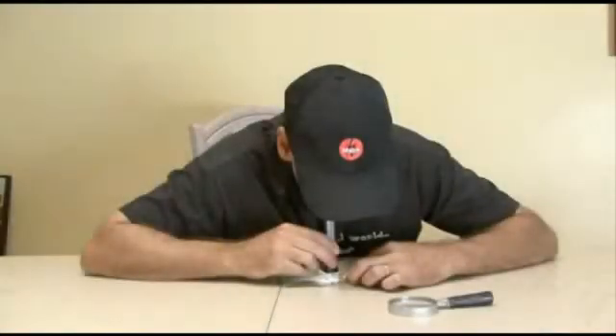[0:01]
Have you ever taken a close look at a new $20 bill with either a microscope or maybe a magnifying glass? Well, you're going to find on there, if you know where to look, what's called microprint, which is small words and numbers that are there for security reasons. Well, today, we're going to take a microscope to the next level by building a lensless microscope where you can actually record what you see on this week's Weekend Project.
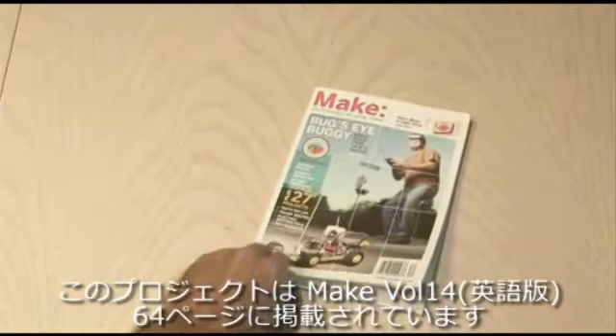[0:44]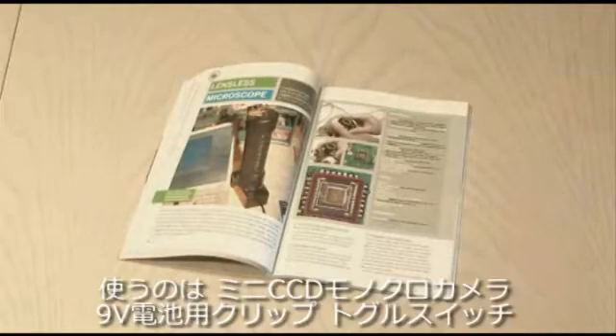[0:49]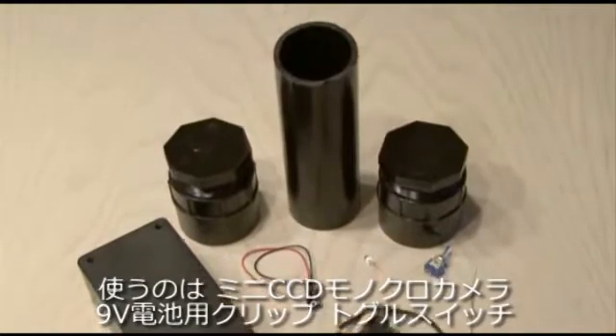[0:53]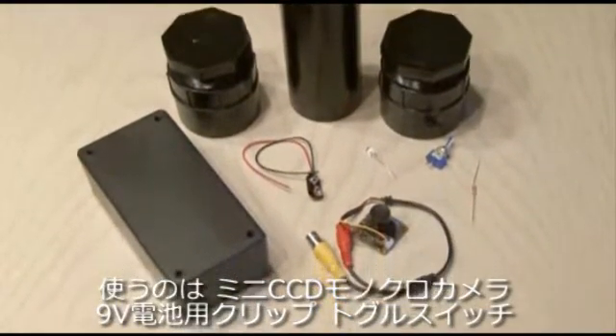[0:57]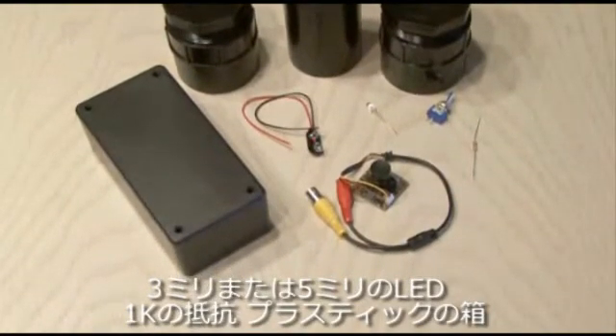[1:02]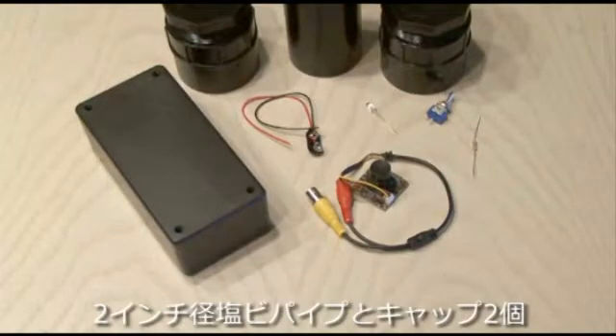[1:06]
You'll find the lensless microscope in Make Volume 14, page 64. The main components are a mini CCD monochrome camera, a 9-volt battery clip, a single-pole, single-throw switch, a 3mm or 5mm LED, a 1K resistor, a project box, and some 2-inch PVC pipe and caps.
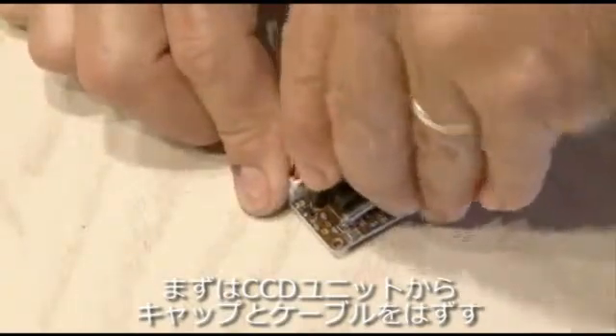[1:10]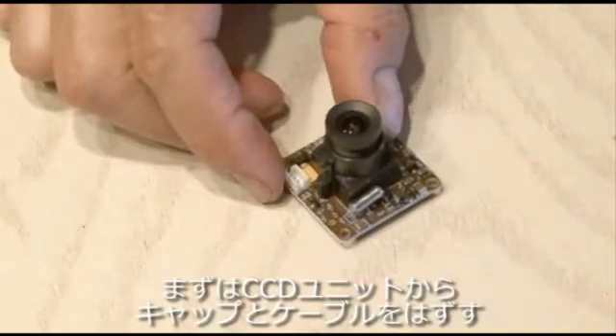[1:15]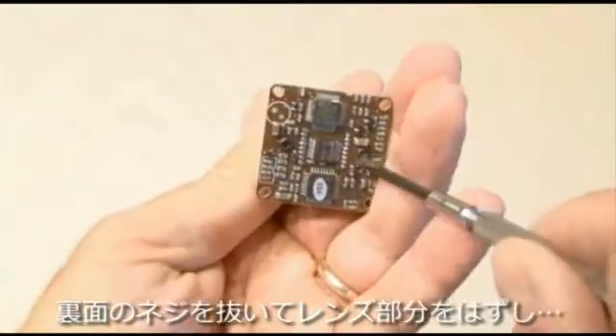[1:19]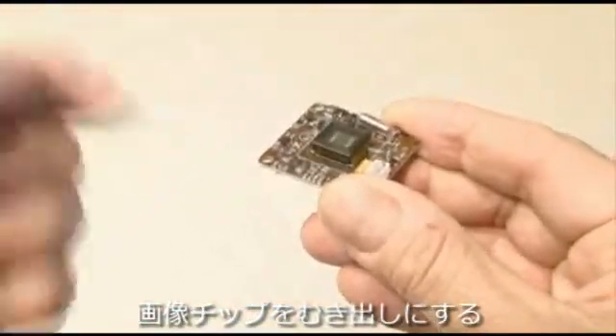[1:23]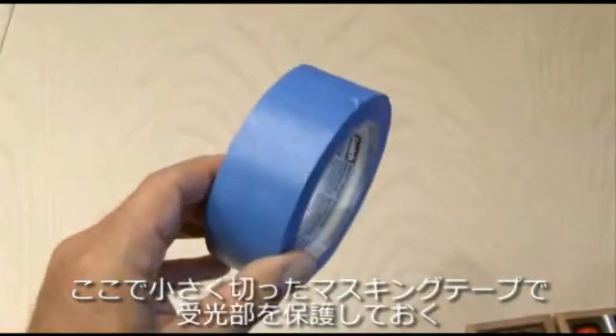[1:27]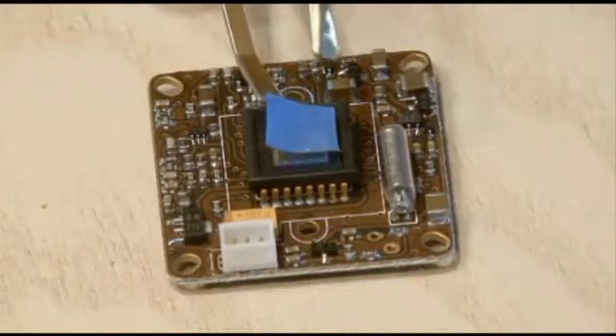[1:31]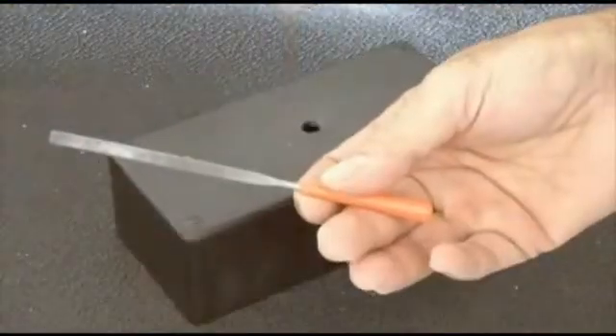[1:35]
Now the first step is to take apart the CCD camera. We'll remove the cap and the power and video cable that's going to the board. And then we're going to remove a couple of screws on the back, which will actually remove the entire lens piece, and all we'll be left with is the imager. I used some blue painter's masking tape and cut a very small square to cover the sensitive imager glass and protect it. Then out to the shop to drill a small hole in the project box and use a file.
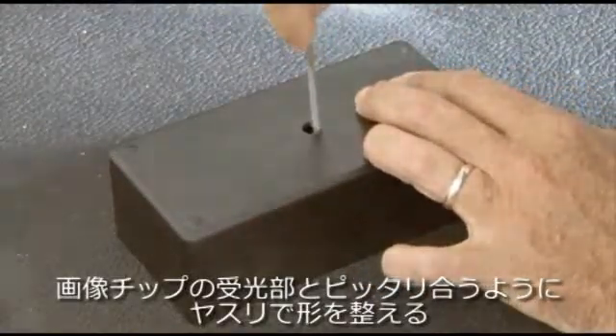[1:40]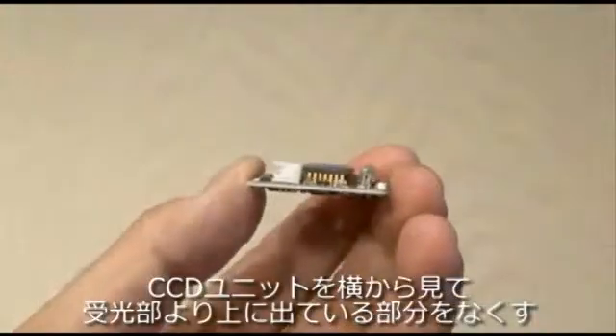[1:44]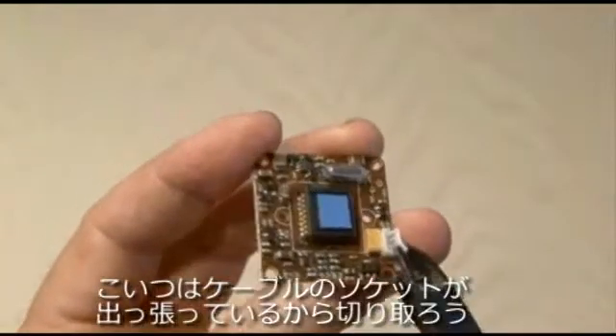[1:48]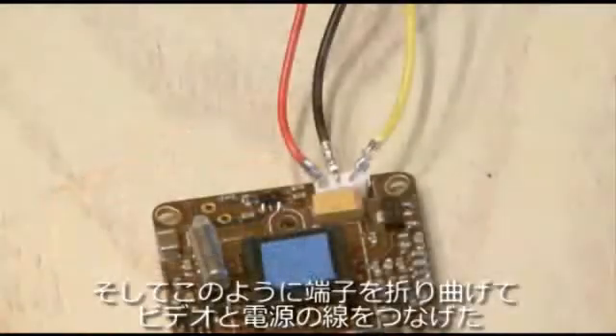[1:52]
We want to square that hole up to be just about the same size as the imager. Now you'll have to inspect your CCD camera and make sure that there's nothing taller than the imager. In this case, the video and power connector was too tall, so I trimmed it down using some snips. And then bent the pins down and reconnected the power, video, and ground cables.
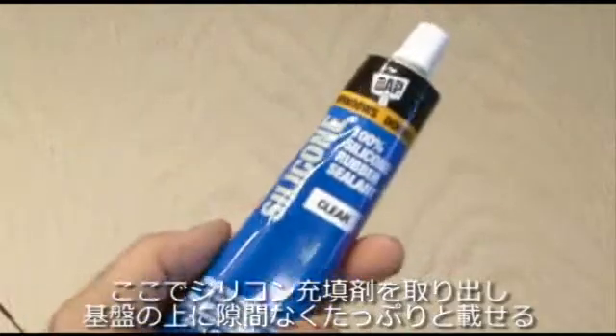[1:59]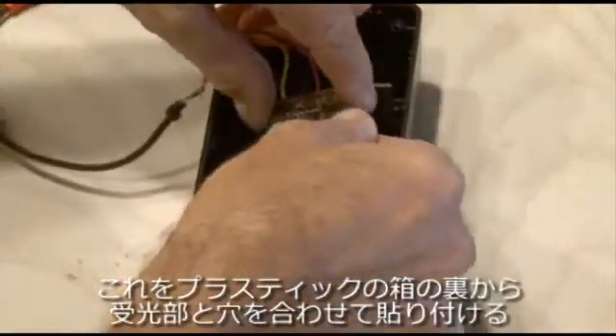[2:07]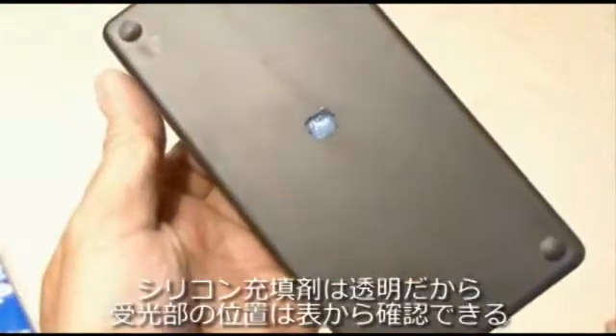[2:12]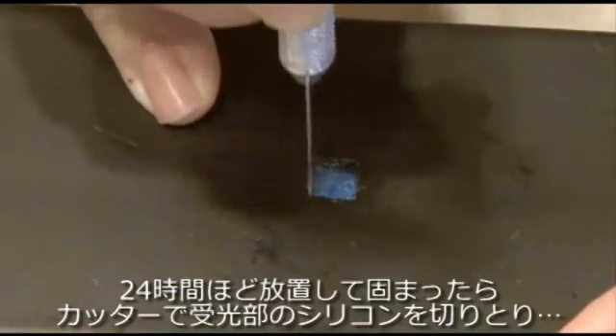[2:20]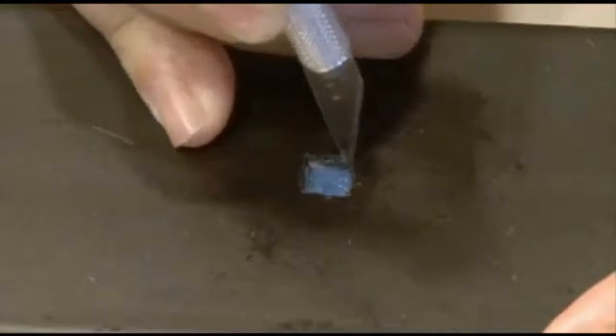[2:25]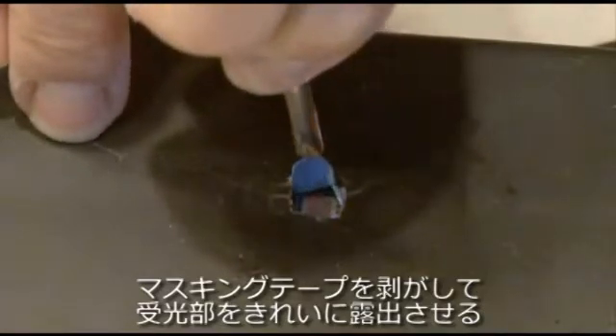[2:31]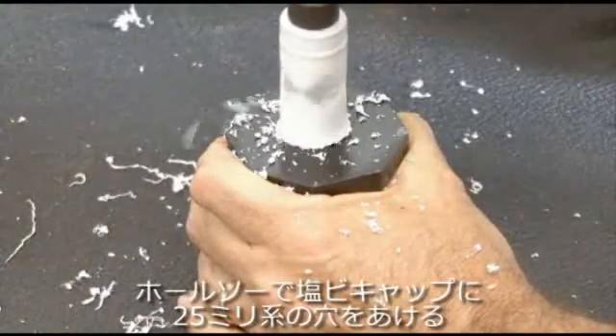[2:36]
Now taking some ordinary silicone sealant, we want to completely cover the imager board in silicone. Then take the board and line it up with the square hole you made and glue it to the bottom of the project box. You can clear away any silicone to get a better view, but make sure it's lined up with the blue square tape that you put on earlier. Then you're going to have to wait it out about 24 hours, take your hobby knife, and start cutting away carefully at the silicone to reveal just the blue tape, which you'll remove, and if all went well, perfectly clean imager glass.
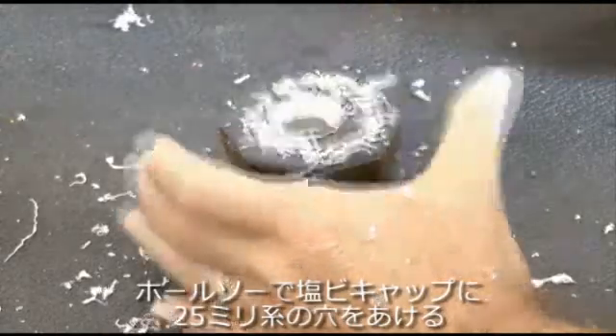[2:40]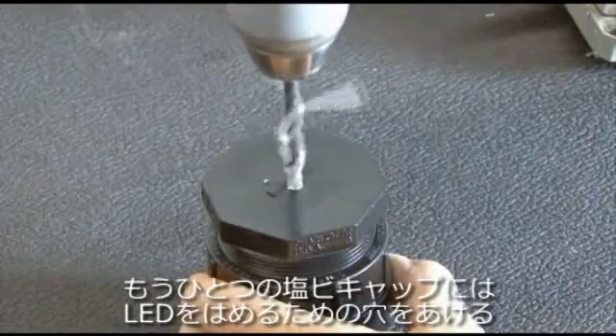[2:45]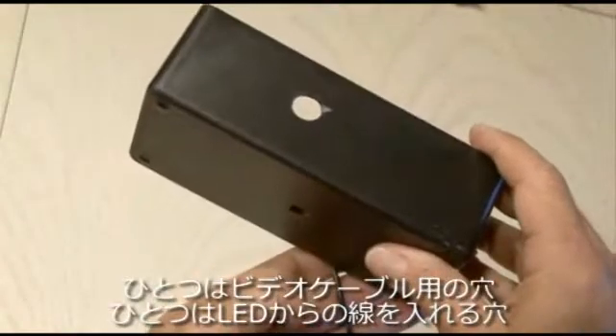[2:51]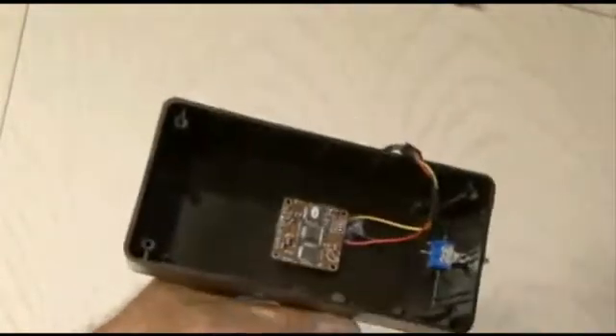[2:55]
Okay, now back out to the shop with our drill and our hole saw. We're going to cut open a 1-inch hole in one of the 2-inch PVC end caps, and then drill another hole in the other PVC cap about the size of the LED. I also drilled 3 more holes in the hobby box, one for the video cable, one for the wires coming out to go to the LED, and one for the switch. After installing the switch, it's time to wire things up.
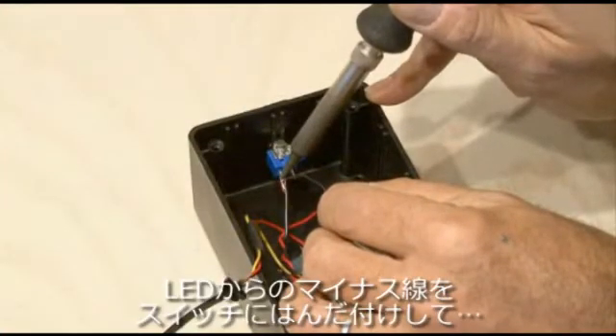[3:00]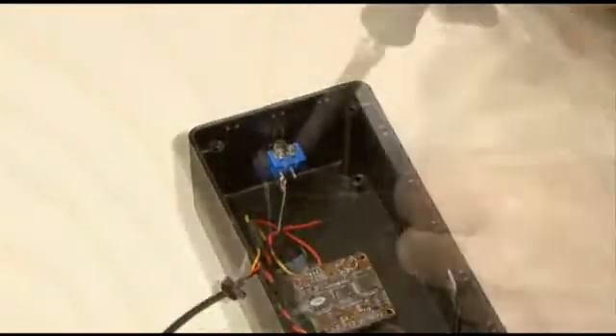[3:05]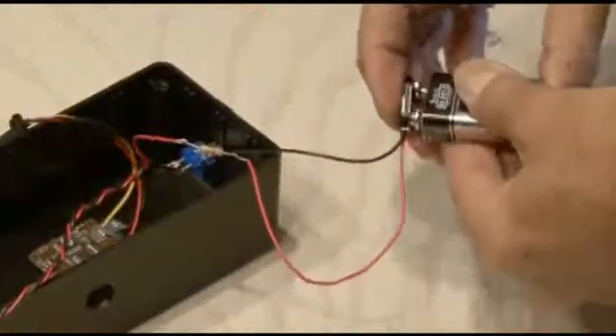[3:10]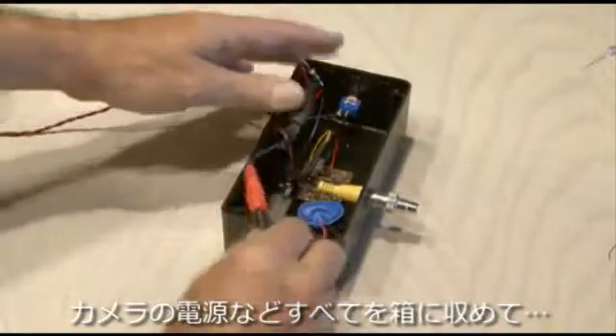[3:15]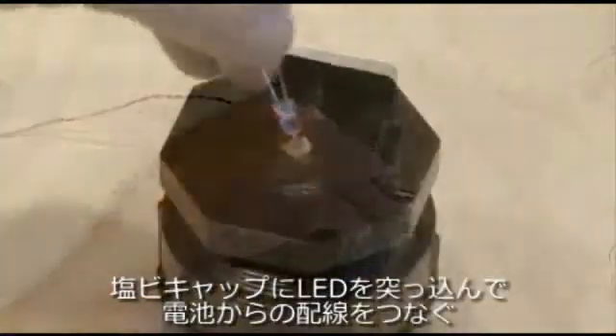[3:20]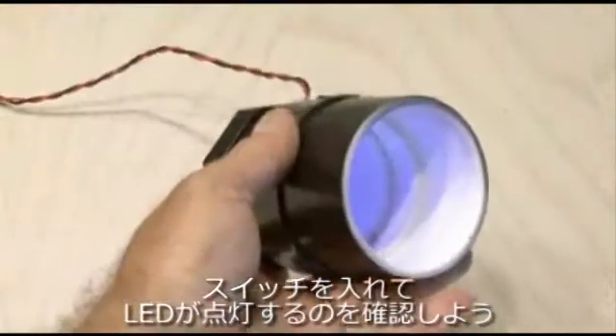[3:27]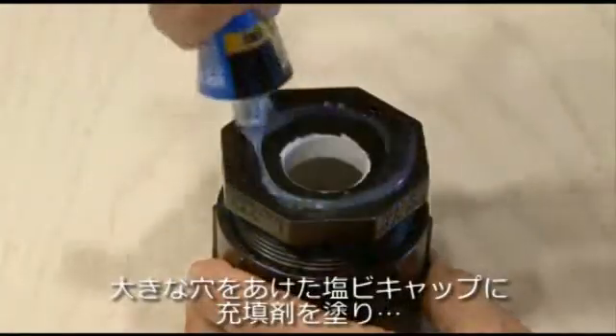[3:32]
We'll go negative to one side of the switch, which will go to the negative side of the LED. And then our positive line will go to our 1K resistor, our 9-volt clip, and to the other end of our LED. Okay, put everything inside the hobby box, including the power source for your camera. Close up the box. And then we're going to put our LED in our one end cap and solder our connections to the LED. Flip the switch, and we should have power, and we do, going to our LED. Now using our silicone sealant, we need to glue down our PVC cap centered over the imager hole.
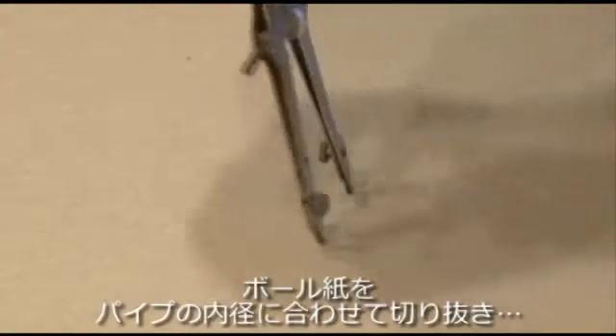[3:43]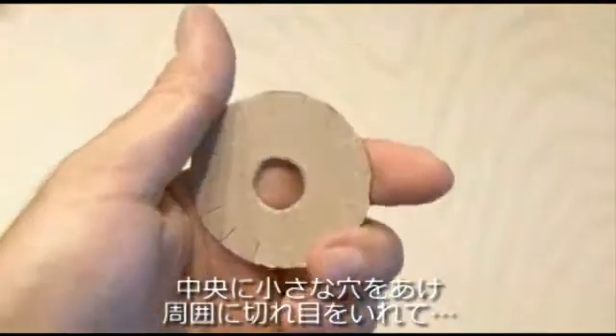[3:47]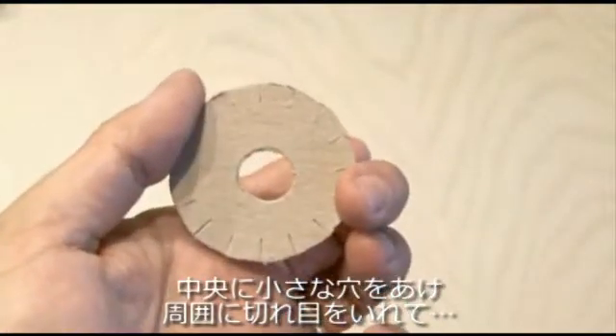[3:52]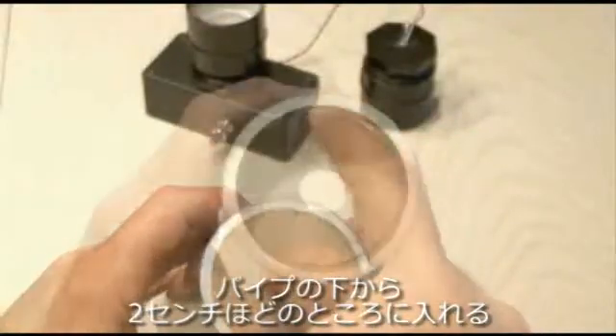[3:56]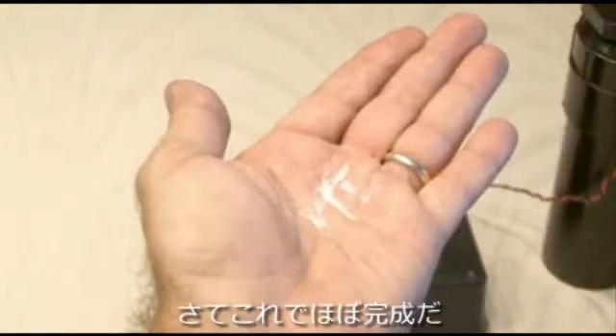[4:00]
Okay, we need something to block a lot of the reflections of the LED going through our microscope tube, and we're going to use a piece of cardboard and draw out a 2-inch circle. Cut that out and also cut a smaller hole in the middle, and then make some little slices about a 1/4 inch deep with your hobby knife, and carefully place it inside of our microscope tube about 1 inch from the bottom. Okay, we are about done.
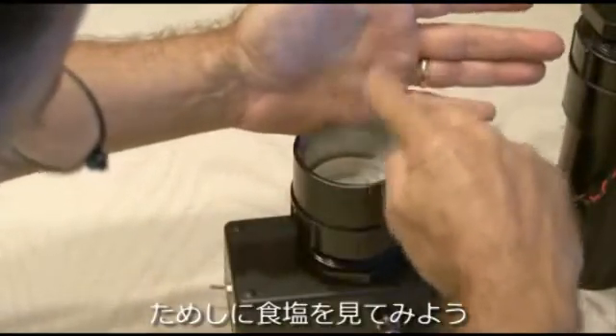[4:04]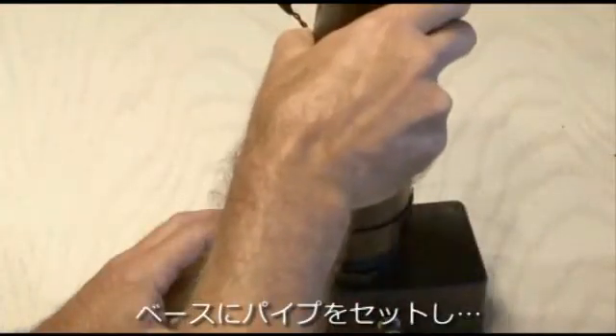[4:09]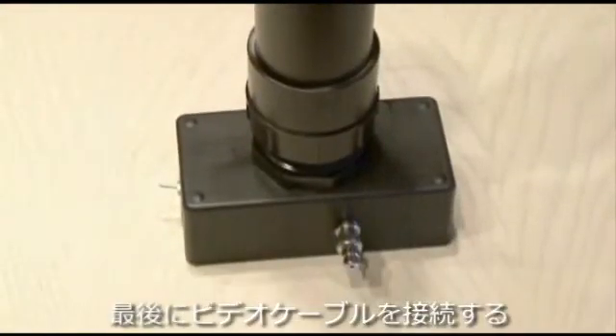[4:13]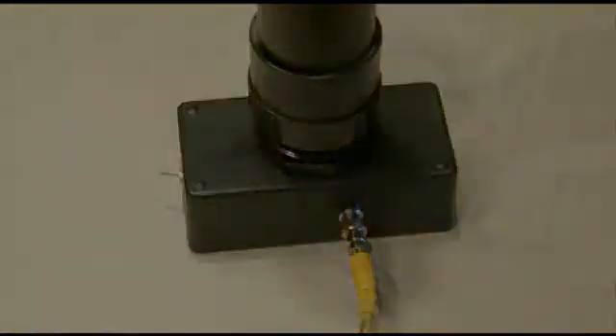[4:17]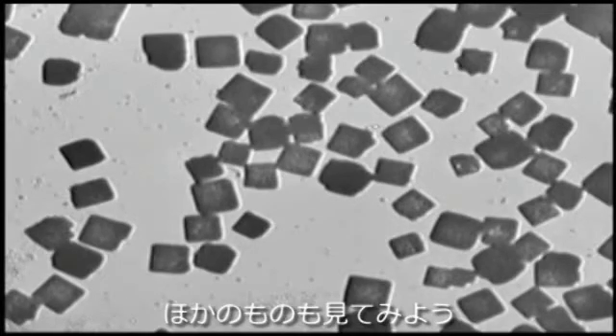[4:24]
The first specimen we're going to try out is just some regular table salt. So I sprinkled a little table salt in, and we take our microscope tube and place it in our base. And the last step is to hook up a video cable to our lensless microscope. And here are the test results. This works really well and is very clear. You can see the salt crystals perfectly, so it was time to try some other things out.
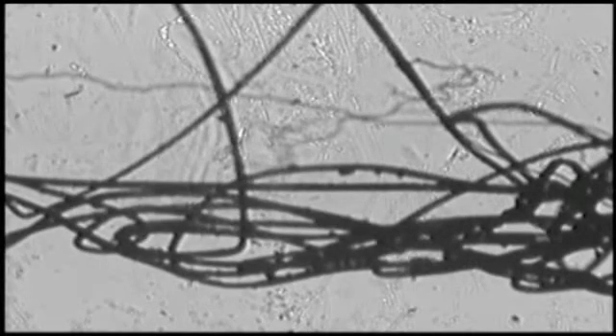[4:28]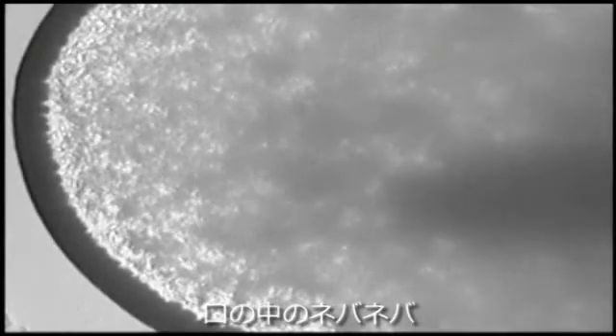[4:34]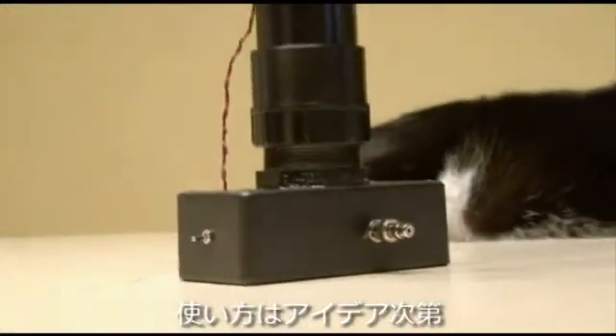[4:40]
I tried some human hair, a very tiny ant, and the scraping off of the inside of a cheek. The ideas are almost limitless of the things that you can inspect under the lensless microscope.